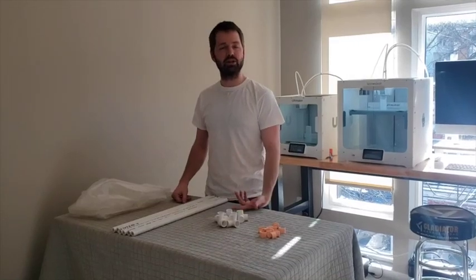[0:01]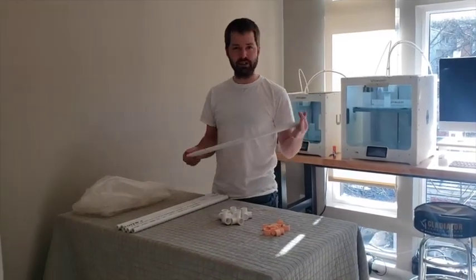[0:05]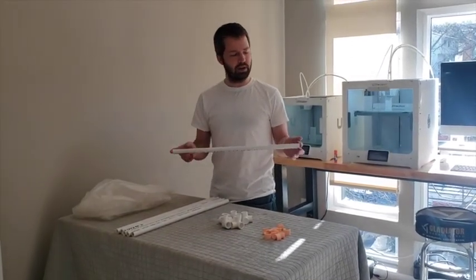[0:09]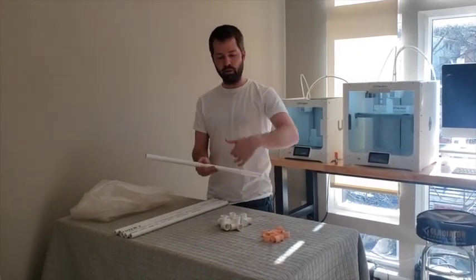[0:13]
Hi, so I'm going to show you how to assemble this device. There's PVC pipe, half an inch is the size. It's available at any hardware store like Home Depot or Lowe's. I cut them with a PVC pipe 23.5 inches. That way when you apply two sets of fittings, the widest it becomes is 2 feet.
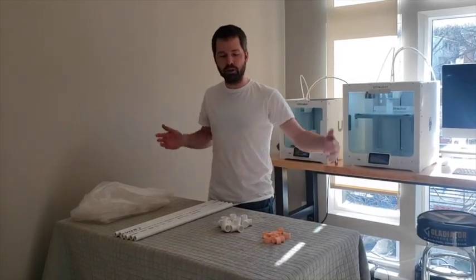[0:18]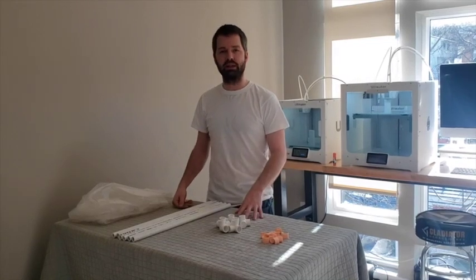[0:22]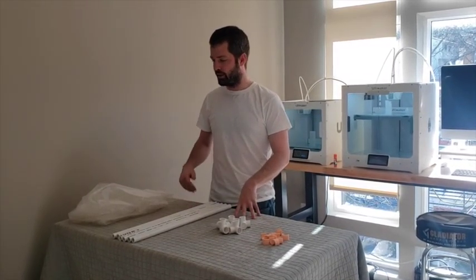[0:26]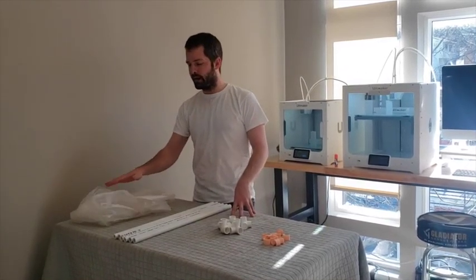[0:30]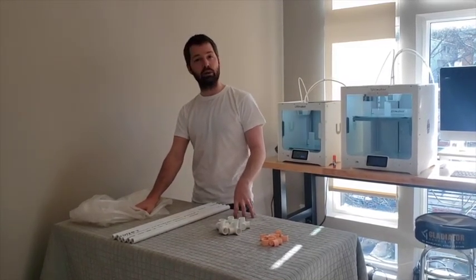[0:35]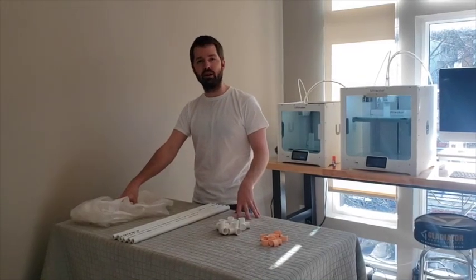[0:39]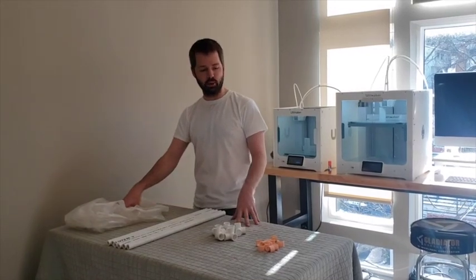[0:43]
The idea is that we're going to build a triangle that is 2 feet high by 2 feet wide, which I think is the minimum working space for an intubation, like high risk intubation specifically. You're going to need your 72 by 72 inch vinyl sheeting. You can use any real plastic you want. There's a couple different plastics out there used for shower curtains. The one I used was $5 on Amazon, and I'm sure you can get bulk discounts. Get the clearest one you can find because visibility is important.
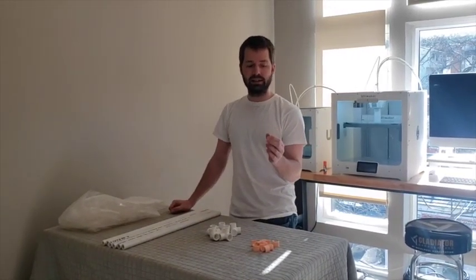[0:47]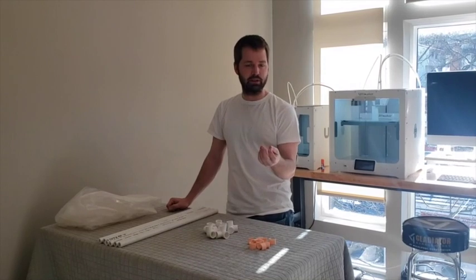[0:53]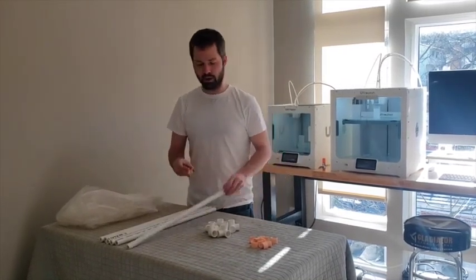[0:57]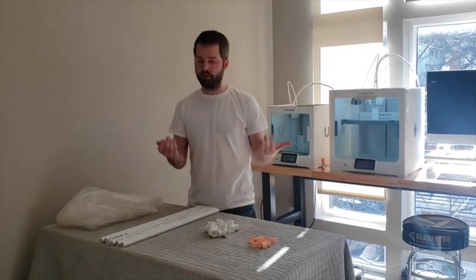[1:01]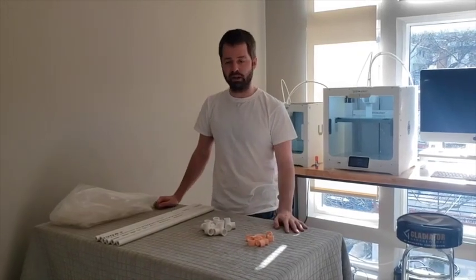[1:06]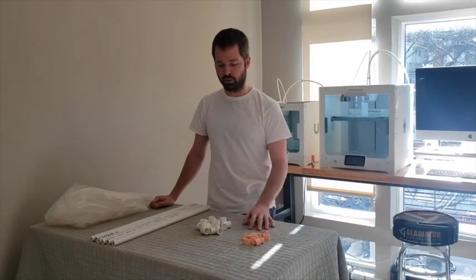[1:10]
This is the only part you can't buy at a store. It's a C-clip. So they take about 5 minutes to 3D print each. Use PLA, which is the cheapest 3D printing material we have. And what it does is enable you to snap parts onto the PVC pipe. If you can find a standardized part, let me know. Otherwise, duct tape works fine all the same. This is just reusable. You can do it snap on, snap off, and make adjustments without increased work.
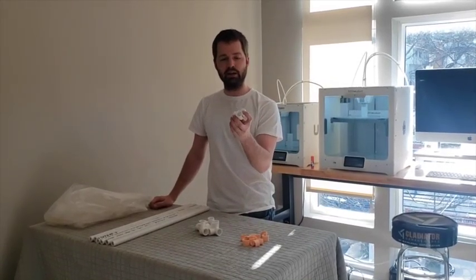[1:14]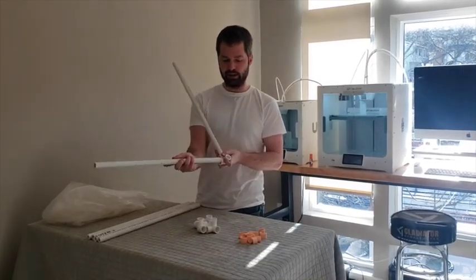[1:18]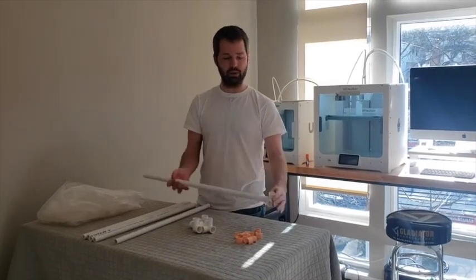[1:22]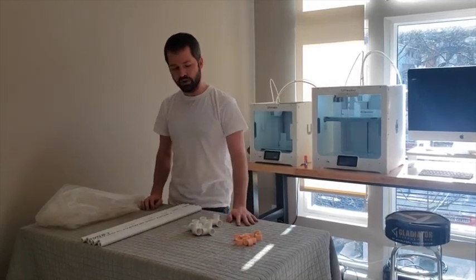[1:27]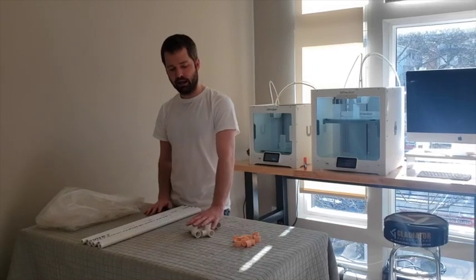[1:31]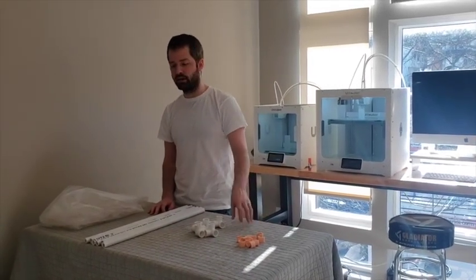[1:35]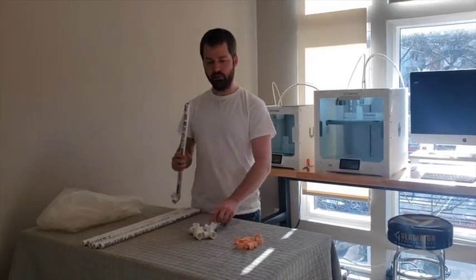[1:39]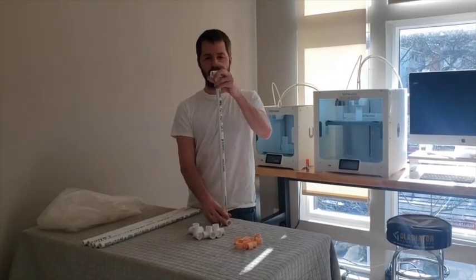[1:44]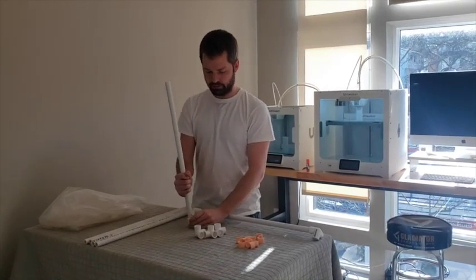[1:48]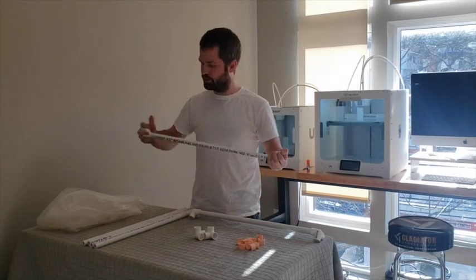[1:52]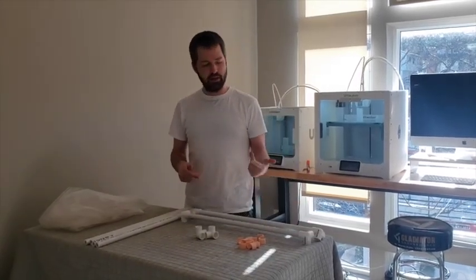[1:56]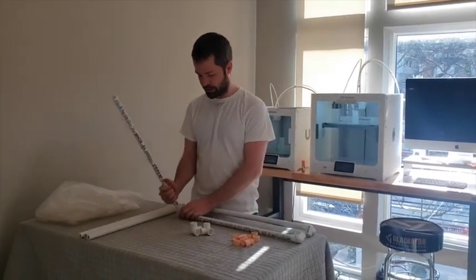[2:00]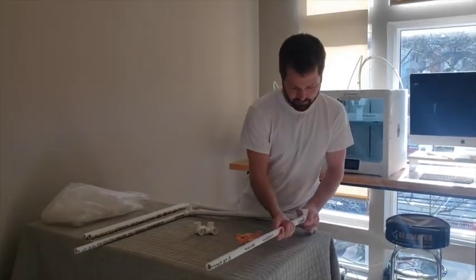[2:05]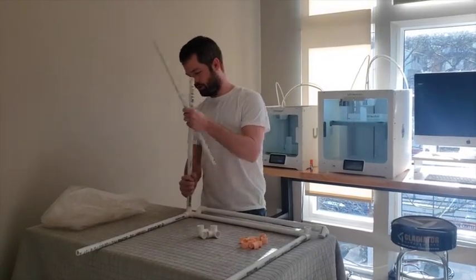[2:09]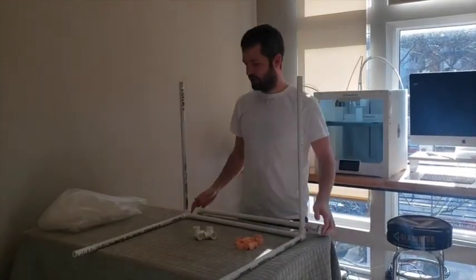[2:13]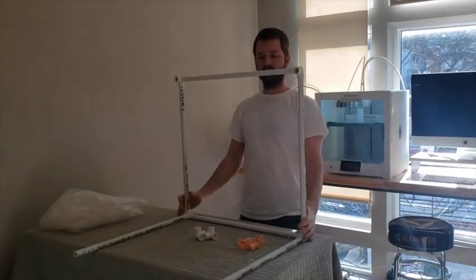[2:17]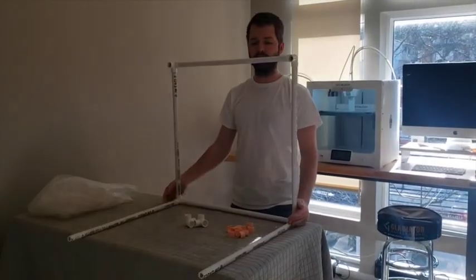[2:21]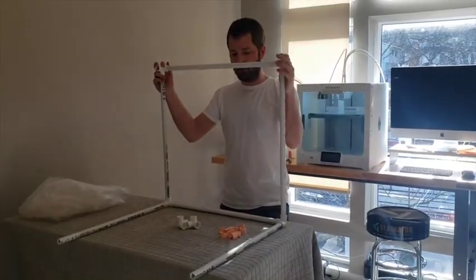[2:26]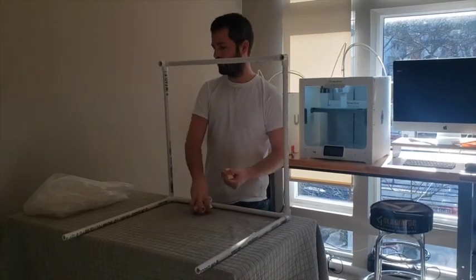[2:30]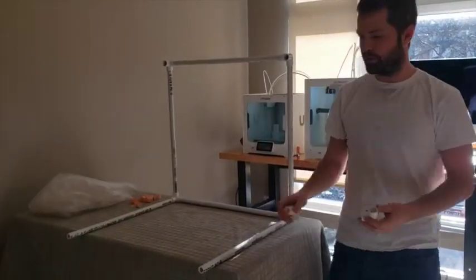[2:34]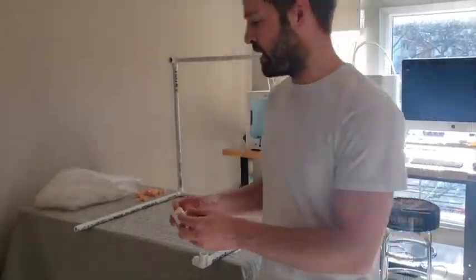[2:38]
And then 2 more for the front frame. 1, 2. Then I'm going to add the top. 1, 2. So this is your basic frame. It weighs maybe 2 or 3 pounds, very lightweight. PVC is a great material. And then with your C-clamps and remaining parts, everything else is modifiable or extra. I actually like the idea of adding weight, so I'm going to add these 2 pieces to the end. I'm going to move around a lot, so it's good to have some counterweight.
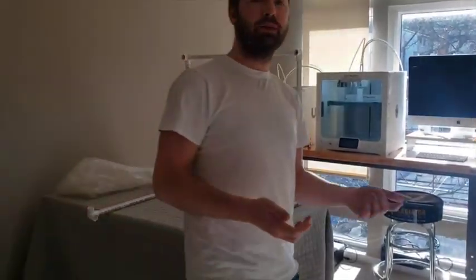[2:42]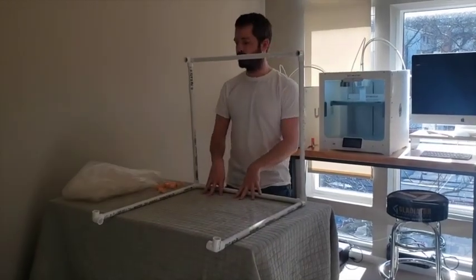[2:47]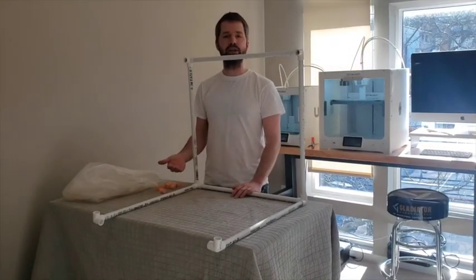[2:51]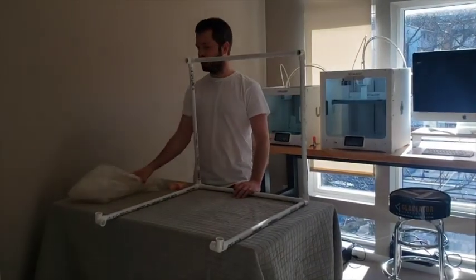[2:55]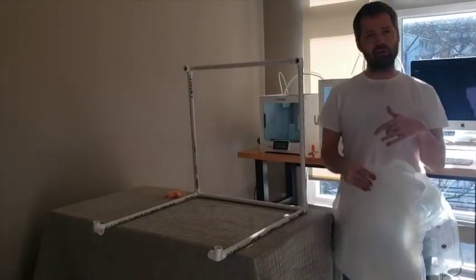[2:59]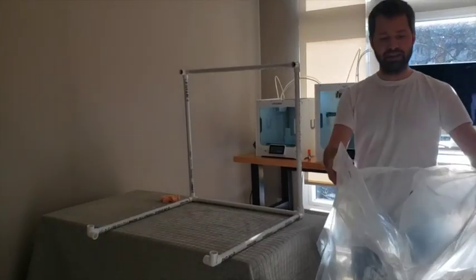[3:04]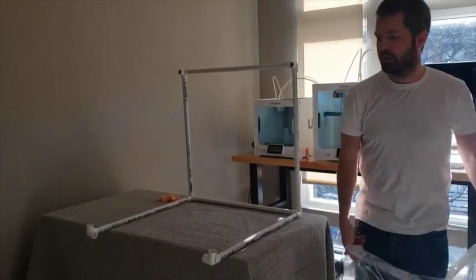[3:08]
And ideally, you build the frame at a bare minimum before you have a patient come into the emergency department. I'm going to go in and assemble the whole tent, because again, in a perfect situation, all of these things would be set up in advance. So I'm going to have my C-clips ready. I'm going to take my sheet, which again has to be pre-cut. You're going to cut 6-inch holes at sites. I'll show you a little roadmap of where you can cut them for end users. Since it's 72-inch square, everything can be standardized for user to user.
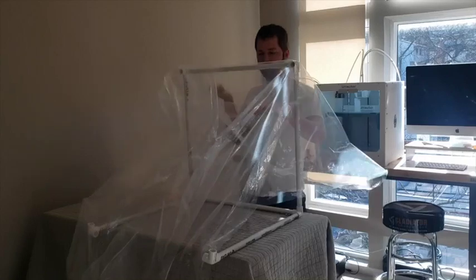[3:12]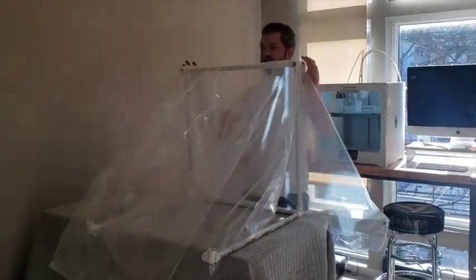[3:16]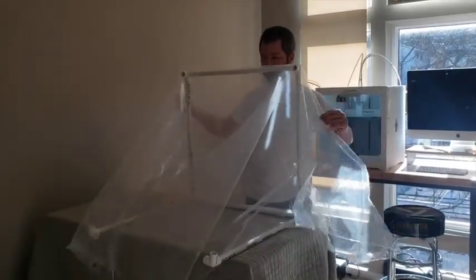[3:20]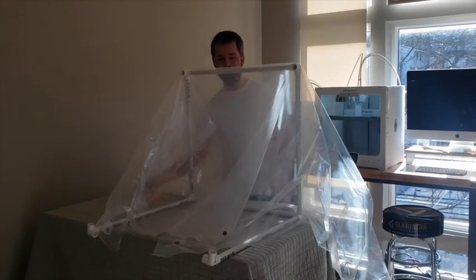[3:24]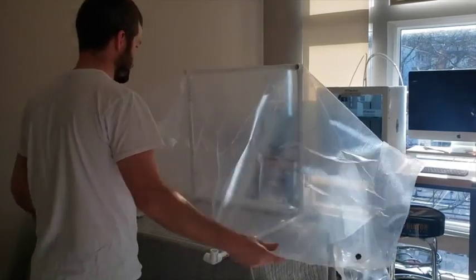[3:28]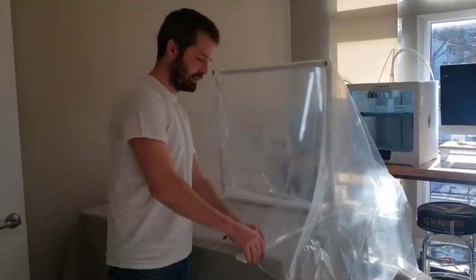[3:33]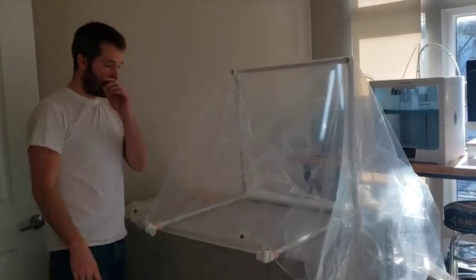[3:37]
You're going to drape over the top section. You're going to take these 2 front holes and put them towards you to make them symmetric in the center of the box. Everything you're going to pull taut and symmetric over the sides with a little bit of slack in the back. The first 2 clips you're going to use are going to be on the back side. So you're going to come to the back here. Again, you're going to put it taut. And you're going to clip each of these things in.
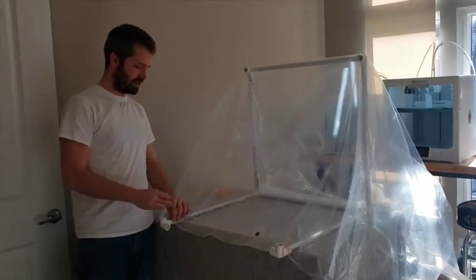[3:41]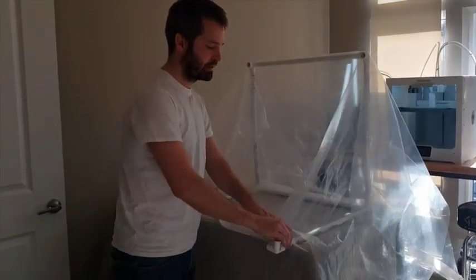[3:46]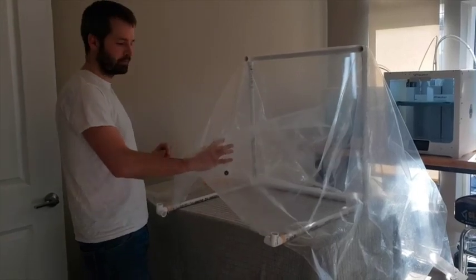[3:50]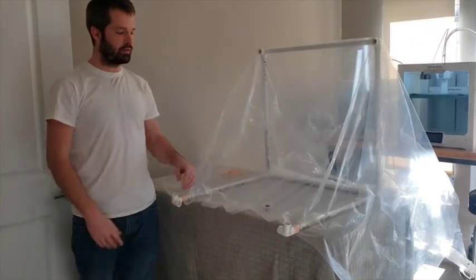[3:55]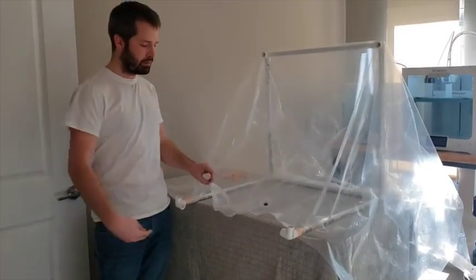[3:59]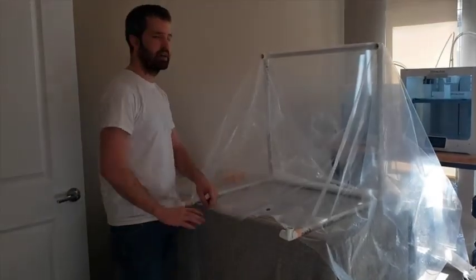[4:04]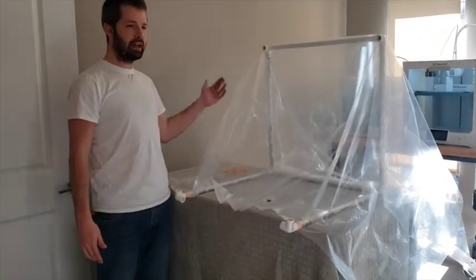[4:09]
They just snap on to the end pieces, and that's going to put tension in the back. When you get a really morbidly obese patient, you might have to take the C-clamp off, add some slack by a couple of inches, and do the same thing on the other side. And that will fit a more obese patient and have more wiggle room. Ideally, you would have it as tense as you can to reduce air movement or air flow. And if it was a little too tight, the object would just ride over the belly. It would make bigger windows for people to pass you stuff. But at the bare minimum, you need enough slack that somebody could pass you an item in a controlled fashion on the sides.
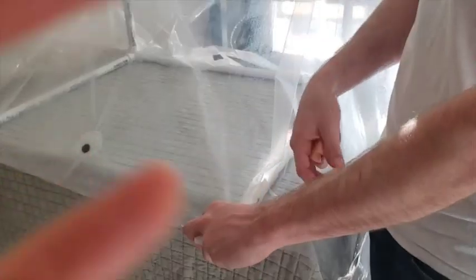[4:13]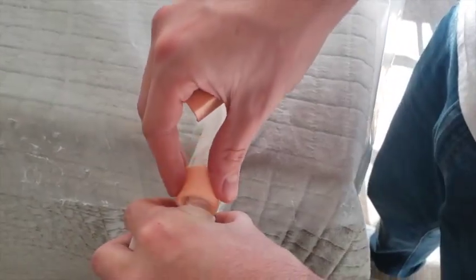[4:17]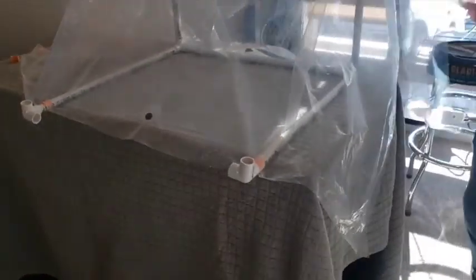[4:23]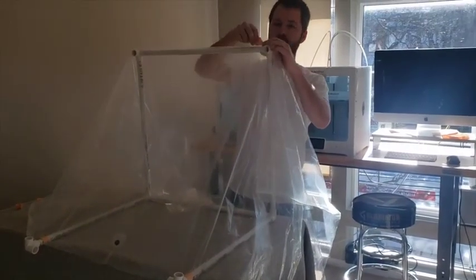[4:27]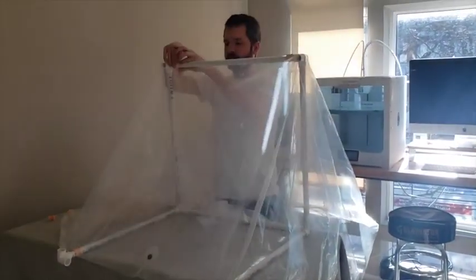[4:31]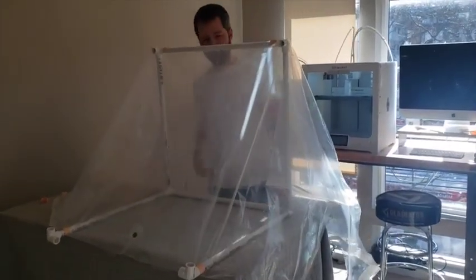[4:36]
The other 2 locations people could access the patient are from the side triangles. Right there. Each of the C-clamps snaps on the end piece, keeping tension on the back. Now I'm going to make it tight over the top, and C-clamp 1, C-clamp 2, so we just have the back and the top.
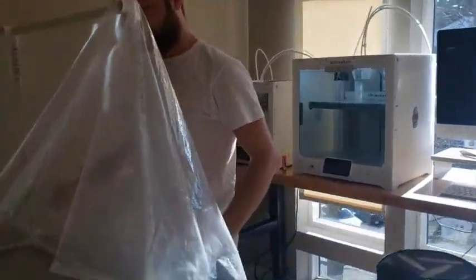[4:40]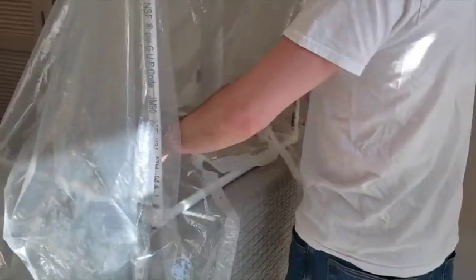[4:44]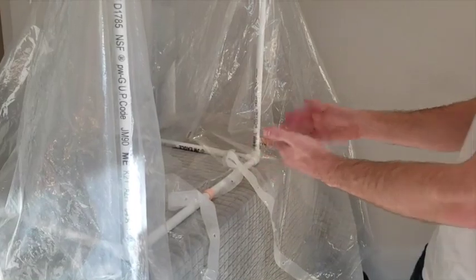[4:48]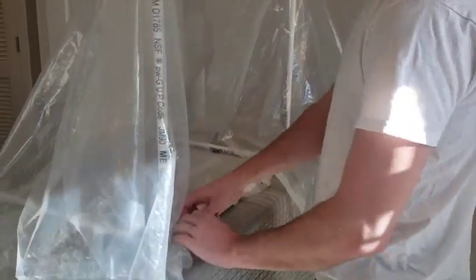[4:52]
The last piece in this axis is going to be the front. Come around. So the front user actually needs some slack, so what I'm going to do is put the end piece with as much slack as I can perform in the front. And then again, I'm going to clip to the sides. I'm not going to do it tight. I'm going to give it a couple of inches of slack.
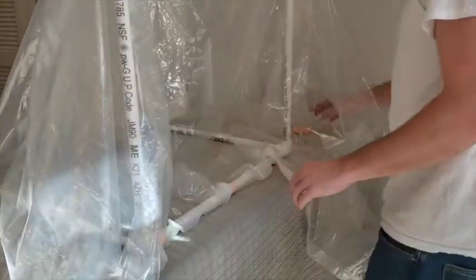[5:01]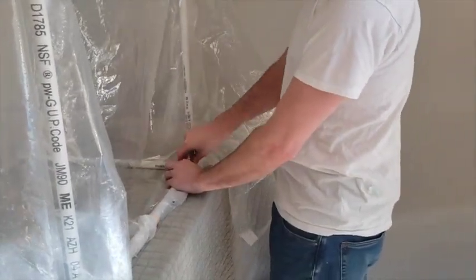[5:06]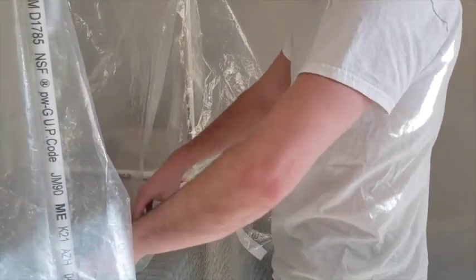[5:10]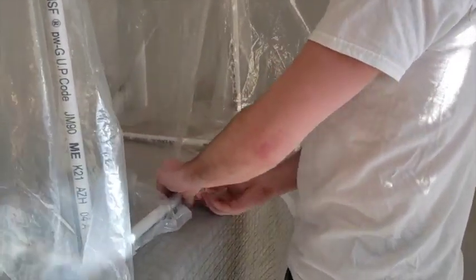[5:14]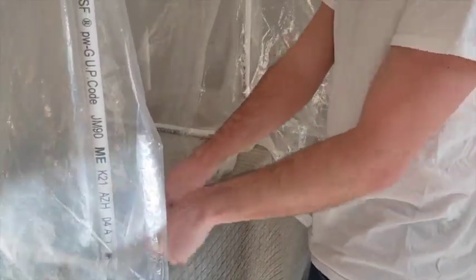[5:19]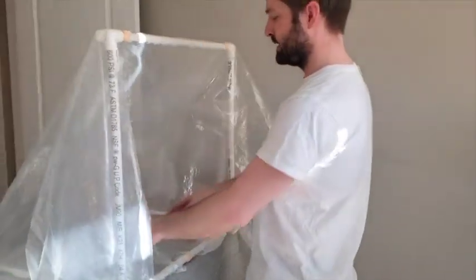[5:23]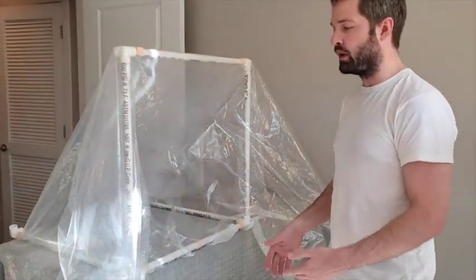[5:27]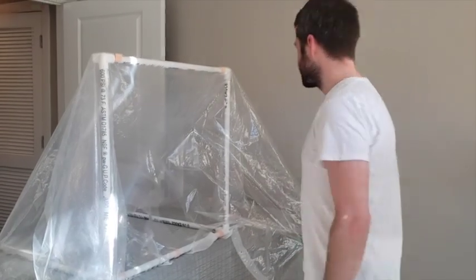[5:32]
And you can also tuck things underneath or roll the C-clamps to actually tuck things on the underside of the components. That'll help minimize any flow of air underneath the device. So you're gonna get this front working space that is now defined by the arms. The sides can be completely draped if you want them to. In theory, with gravity, they'll just fall down. If you do want to secure them, again, you can just keep using more C-clamps.
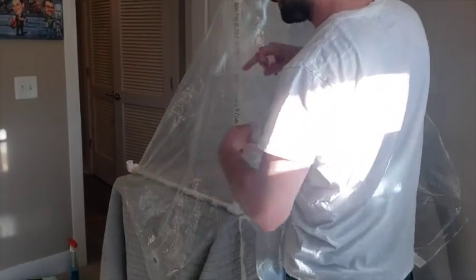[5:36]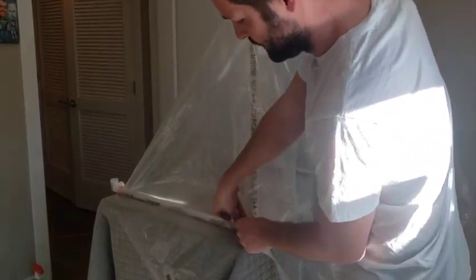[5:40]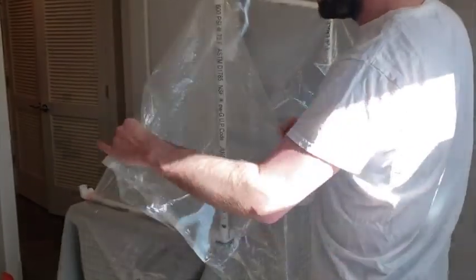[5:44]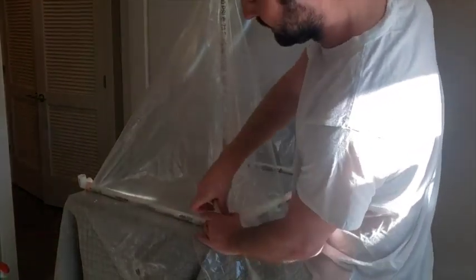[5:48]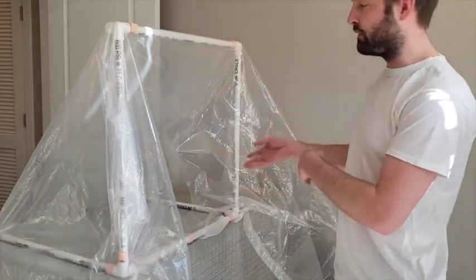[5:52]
What I'd recommend doing is taking one for just the side itself and doing just the side. And then whatever slack you want to get rid of, fold over a few times into the working space and again, apply a clamp. You would just repeat that for the other side.
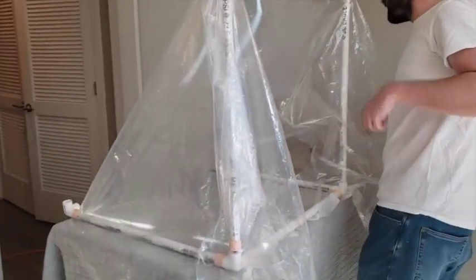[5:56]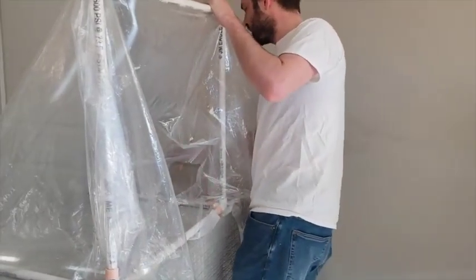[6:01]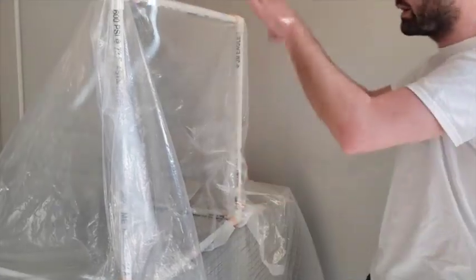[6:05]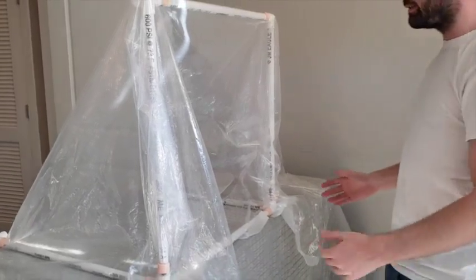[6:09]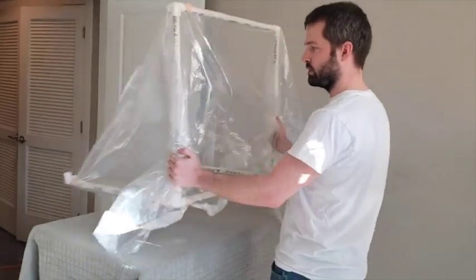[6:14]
So here's my working space, I can reach inside. I can choose to clamp the sides in advance if I want, but I don't have to. The only thing I have to do is provide enough clamping so that I create a workspace and the curtain stays in place. Now, if you've applied all the C-clamps, you can move this object around a fair amount without the tent actually moving or adjusting.
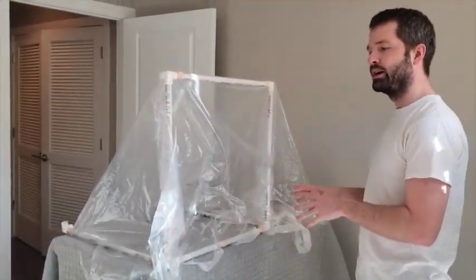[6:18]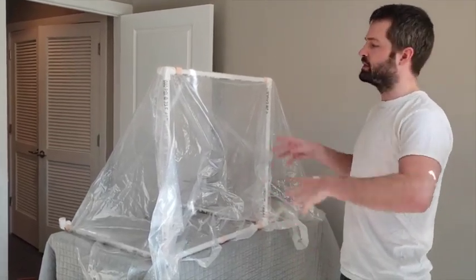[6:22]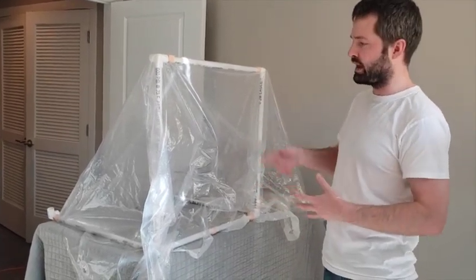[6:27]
And ideally, you would have this tent assembled and ready to go before the patient gets on the bed. So when the patient arrives on the bed, you simply take this tent and place it on the patient, and you can make small modifications for the abdomen on the bottom ones, for the end user if you want over here.
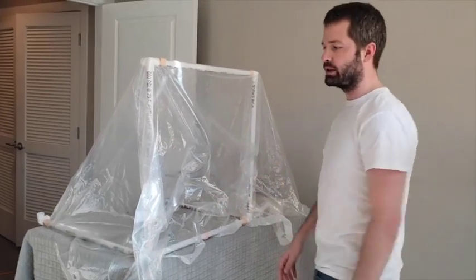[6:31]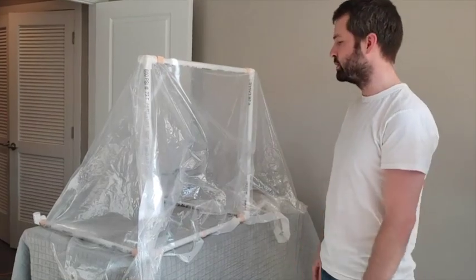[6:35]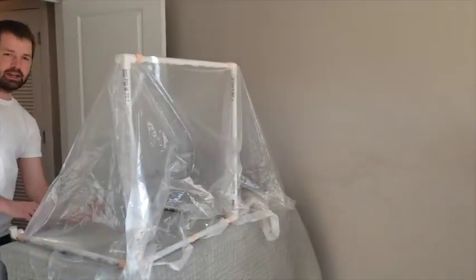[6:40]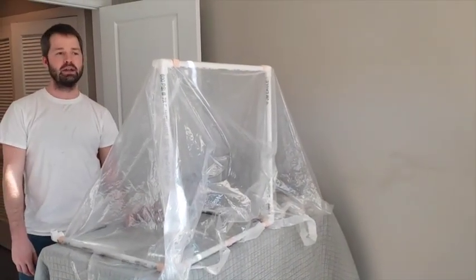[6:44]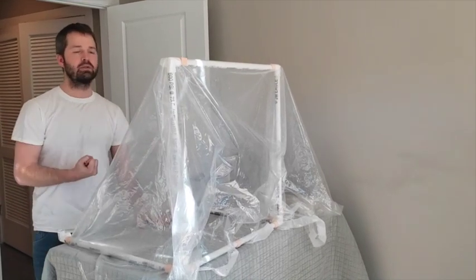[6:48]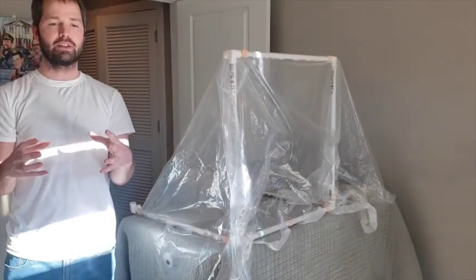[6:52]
In an emergency, you could cut an X, and that would give an extra working space for a person to use. Again, they could also access it from the back end and hand in equipment in a controlled fashion, and you could put a negative vacuum source on the side or abdomen of the patient to draw particles away from the end user. I'll show in a separate video how to make that with three parallel vacuum tubes.
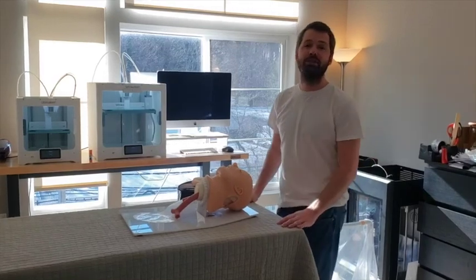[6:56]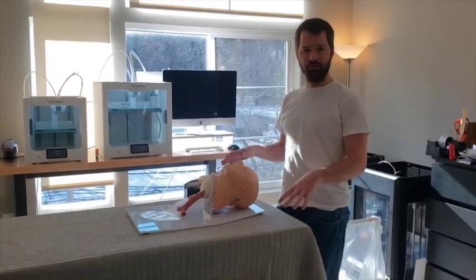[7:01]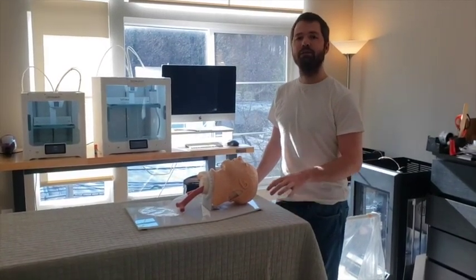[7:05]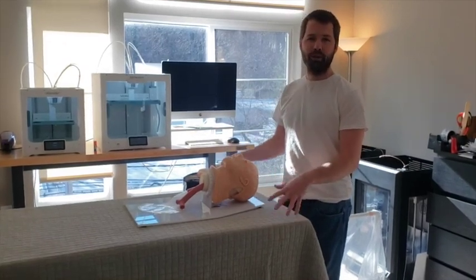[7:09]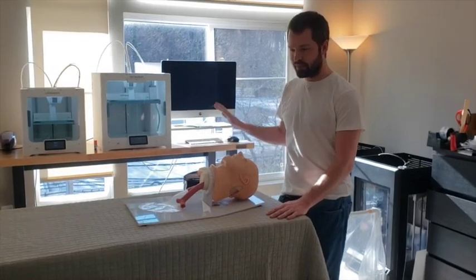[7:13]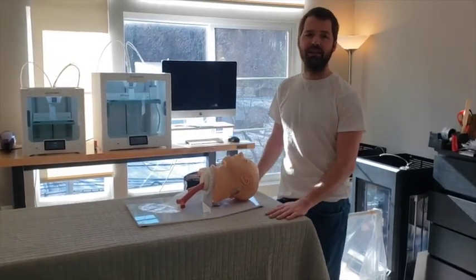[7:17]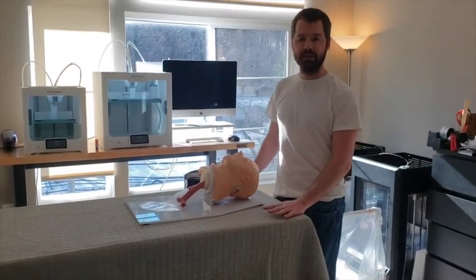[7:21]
So here's a demonstration of how it would work. You would have your patient already on the bed in the room, and in a perfect situation, you would have already assembled your tent before you decide to intubate. So let's assume we're in that perfect world. You had a very nice resident who actually took the time to set these things up in advance. And the tent is set up and just sitting on the other stretcher in the resus bay or set on the side, but fully assembled. Someone spent the 5 minutes.
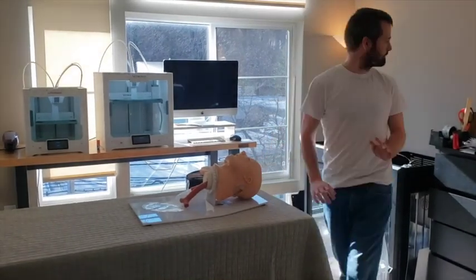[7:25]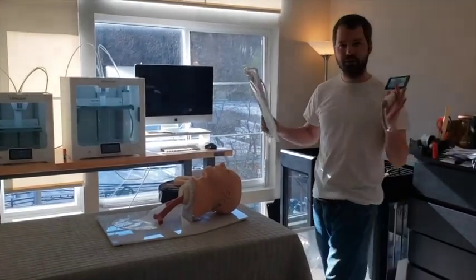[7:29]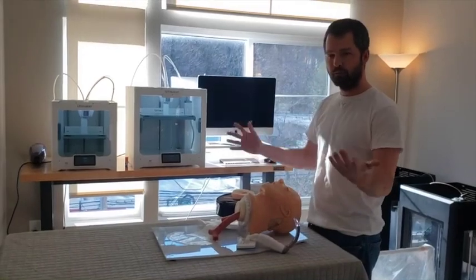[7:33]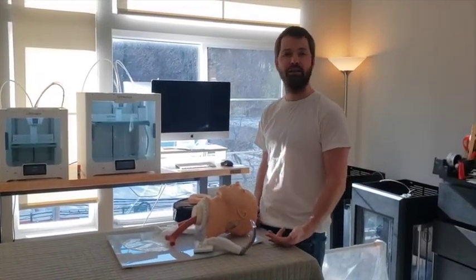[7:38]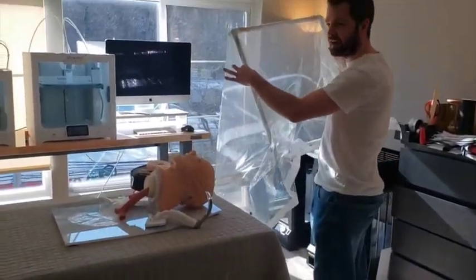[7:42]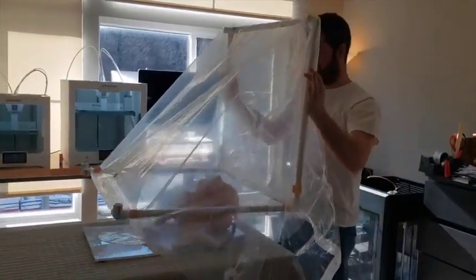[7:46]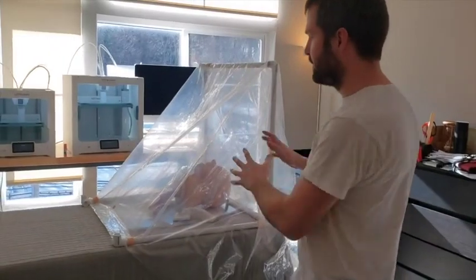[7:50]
So patient rolls in, you make the decision to intubate. You get the equipment you would want and you sit it down next to the patient. Push your meds, do whatever you're gonna do before you start generating an aerosolized event. Then you're gonna grab your tent, which weighs 5 pounds, is already fully assembled, and you're gonna place it over the patient on the stretcher. Now, what it's gonna do is it's gonna cover all the danger zone.
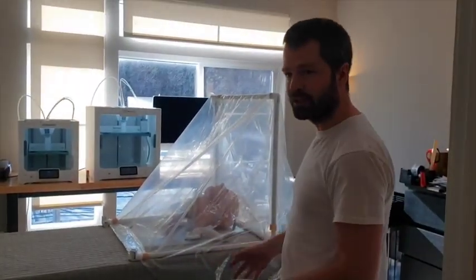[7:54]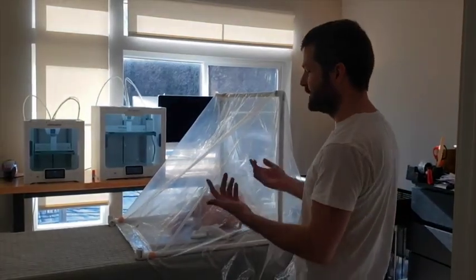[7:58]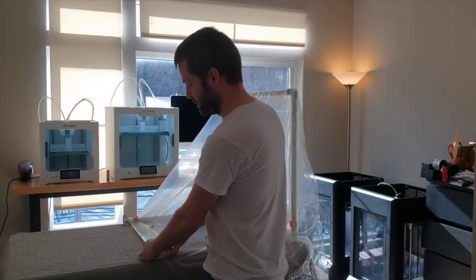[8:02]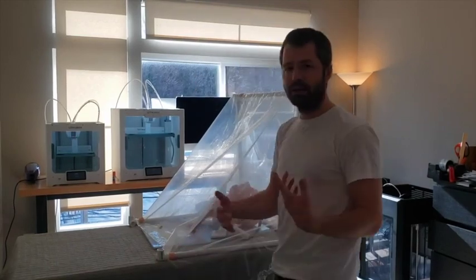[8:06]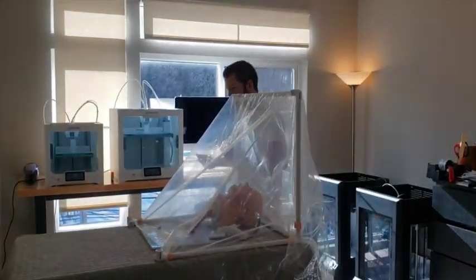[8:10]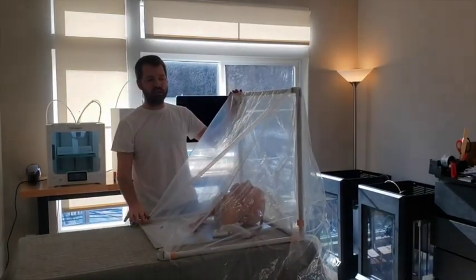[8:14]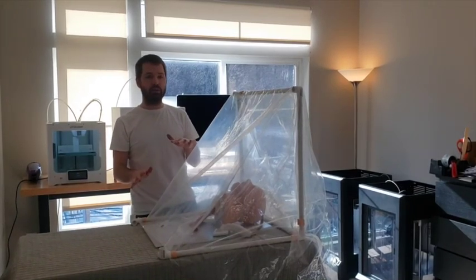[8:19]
And if you need to make adjustments, someone else can be making the adjustments while you're actually setting up for intubation. So for example, if they had a really big abdomen, you need to make more slack in the bottom, you could loosen up one of these clips and add less tension and clip it back down. We'd have to work out some standard way of setting it up. And there's clips all throughout the setup that you can change the tension if you need, but the person intubating is not doing these extra tasks, everyone else is.
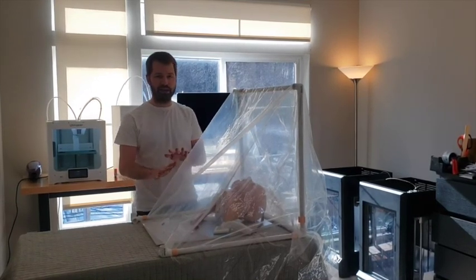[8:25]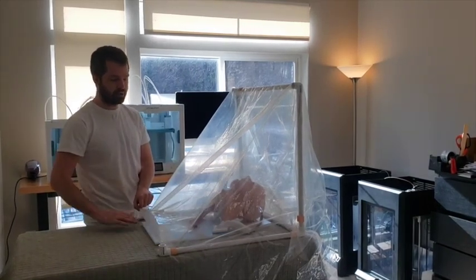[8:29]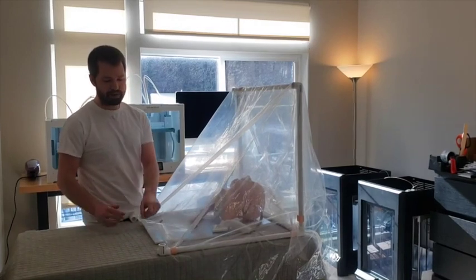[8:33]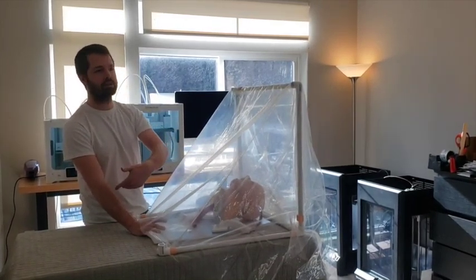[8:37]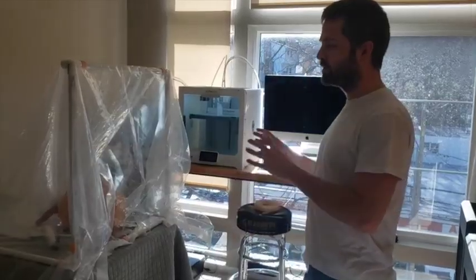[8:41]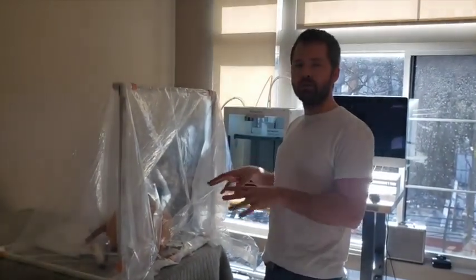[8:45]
There are 2 points of access to the patient with this setup. Ideally, you're not putting in items through the side, but rather with the person's abdomen here, it's naturally gonna make a window. People can provide items underneath to the patient. And again, in a perfect world, we have a vacuum source of some kind drawing things away from the highest risk user, which is the intubator. So, the hood is actually over the patient. There's one predefined user space you have to have, which is the person doing the intubation.
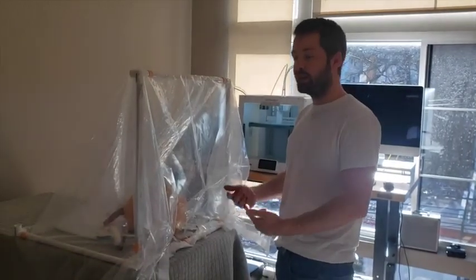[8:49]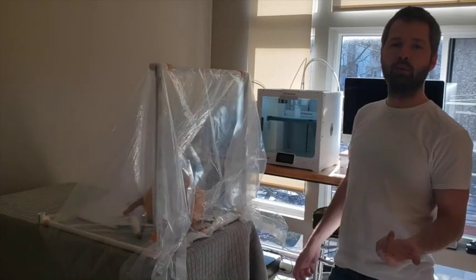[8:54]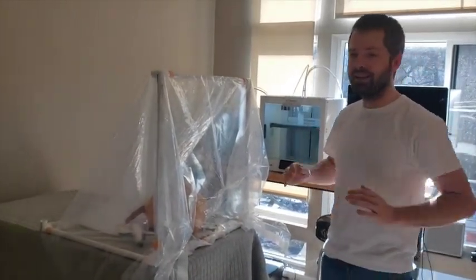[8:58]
If you want to in advance, you can cut holes on the other two ports if you want up to 3 people working in the same space, and you would make the windows partially closed so that unless someone breaks the seal, it stays closed.
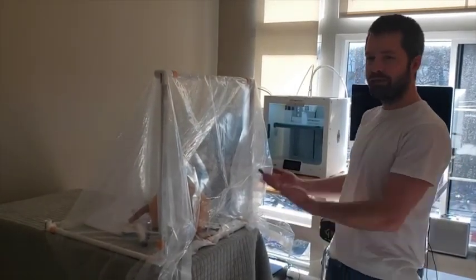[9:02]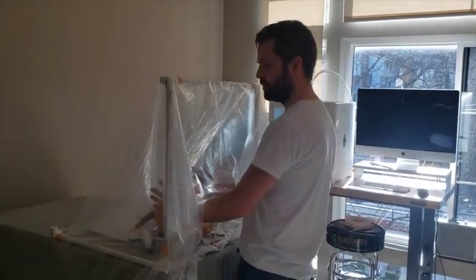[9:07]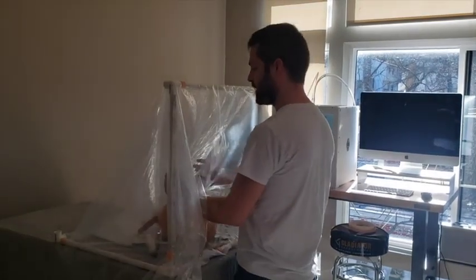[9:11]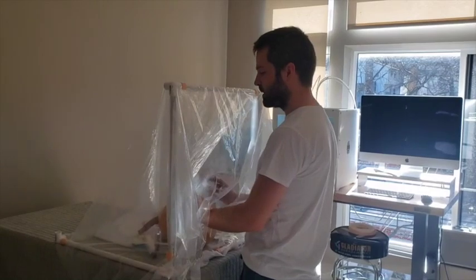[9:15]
So for the intubation, obviously you have to put your arms through the space. So there are 2 6-inch holes. You put your hands through the holes. There's no sharp objects. You have a working room, you can go left, you can go right, you can go up, you can go down. The amount of slack you set in the front defines how much working space you have.
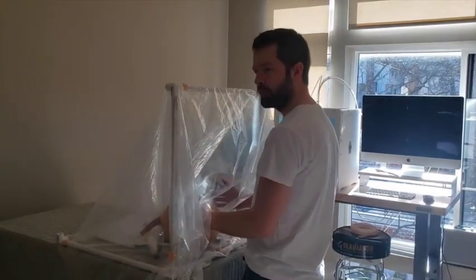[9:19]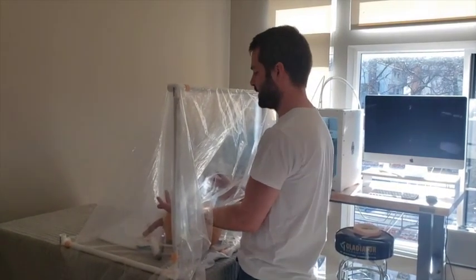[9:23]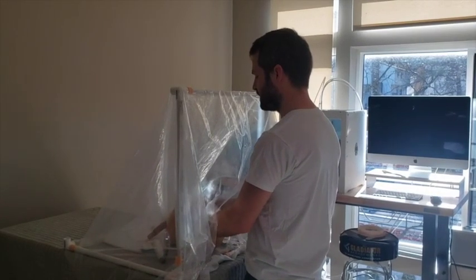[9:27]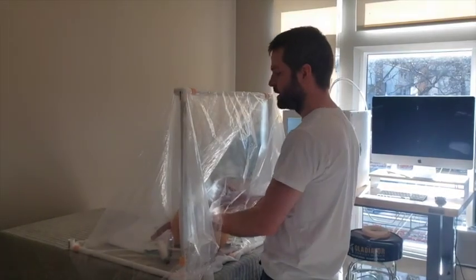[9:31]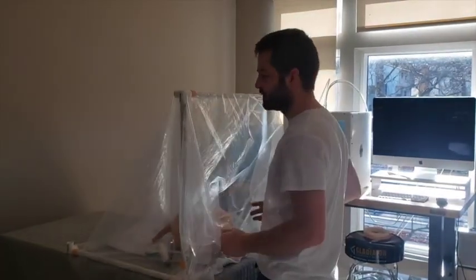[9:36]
But I can get right up on the object and pull all the way back very easily without cutting my arms like the other 2 acrylic designs that are out there from Taiwan. So in this space, I can see through the vinyl, I can see the patient, I can manipulate and move. If I need to, I can ask people to adjust the container. Otherwise, I have to come back out and move the container. It weighs 5 pounds, so it's very easy to do.
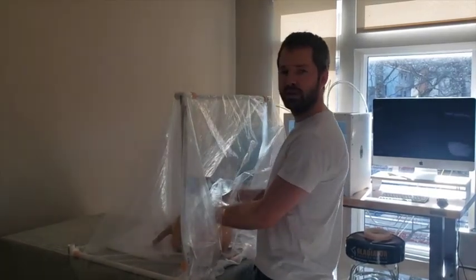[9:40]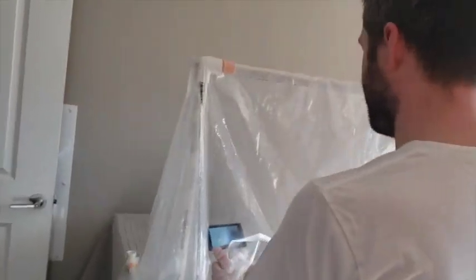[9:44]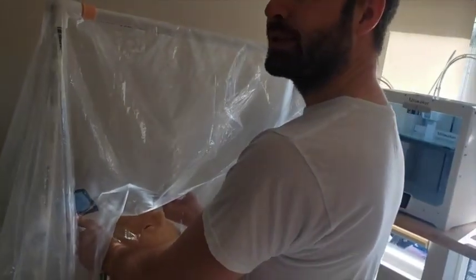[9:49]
So I'm in my working space, I can grab my tools, so you can move over my shoulder. So I confirm my equipment works, I have everything set up in the space I would need. If not, I'd ask an assistant to pass it in from the other side. So I perform my intubation.
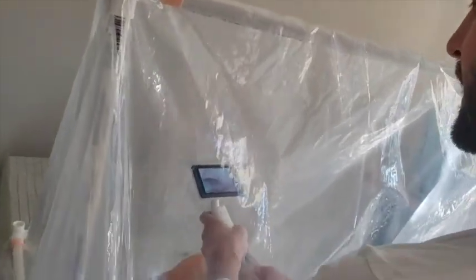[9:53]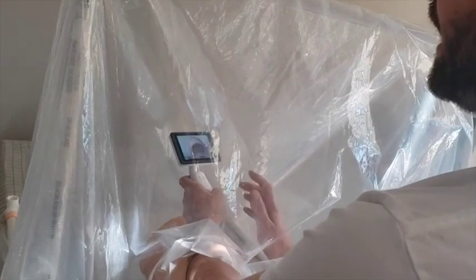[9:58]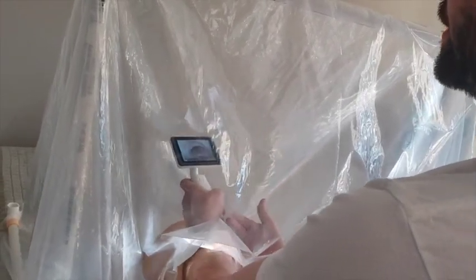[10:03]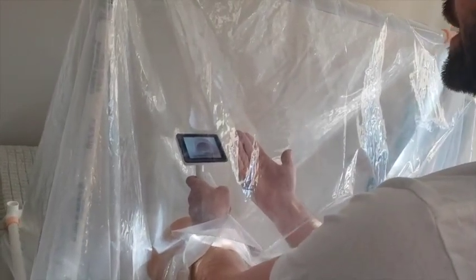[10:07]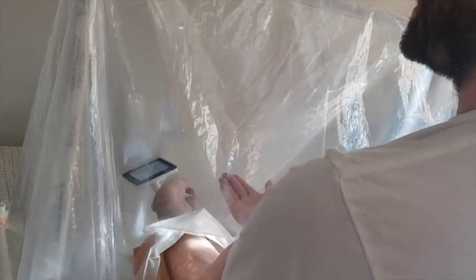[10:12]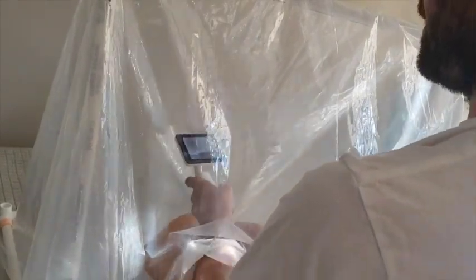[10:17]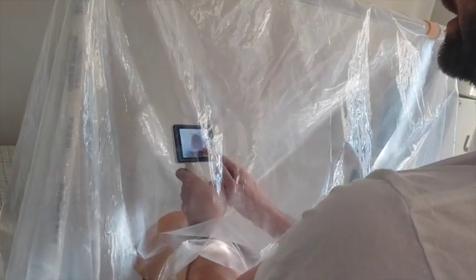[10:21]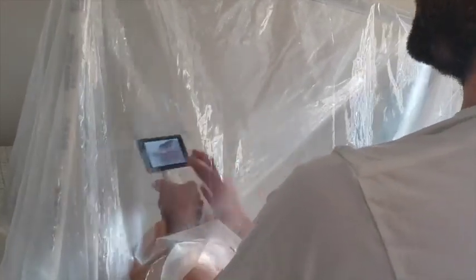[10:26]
And if you notice, in the other 2 models out there, you can't actually bring an object up with height. So if you notice with the video scope, I have an extra foot above this patient that I actually need to be working space. And if the acrylic only goes a few inches above the face, I can't do this, bring an object in and manipulate over the space, because at the very least I have to go at least a foot over the patient for most video scopes. So I'm in my space, I can do my manipulation with a fair amount of movement without an issue.
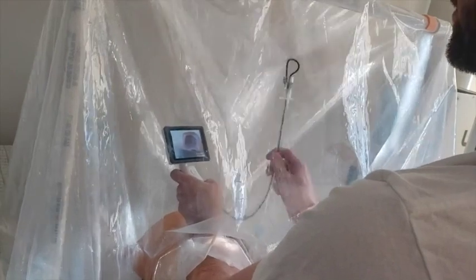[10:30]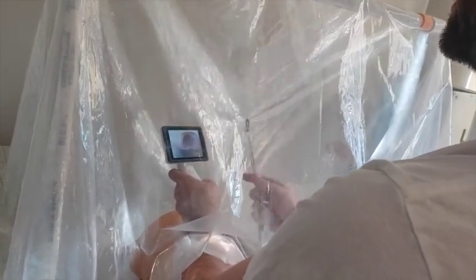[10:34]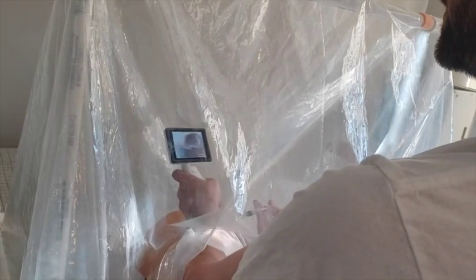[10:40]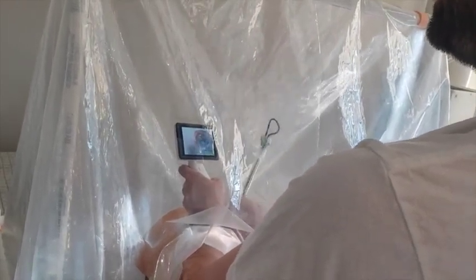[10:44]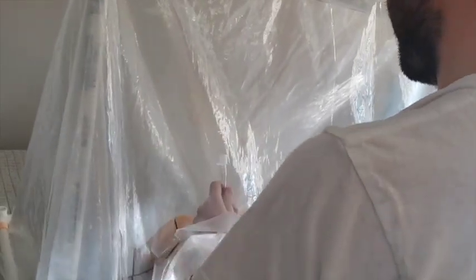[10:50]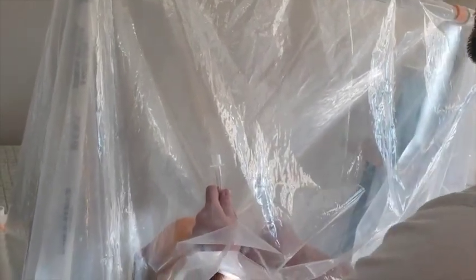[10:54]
I can grab my ET tube, and again, if you watch, as the ET tube comes over and gets placed, unless I'm placing very, very low angle, again, I need some working space. So anything that's rigid and I'm hitting against, I'm not gonna be able to have enough working space to manipulate the tube. So I can place the ET tube, withdraw my tools, secure the tube,
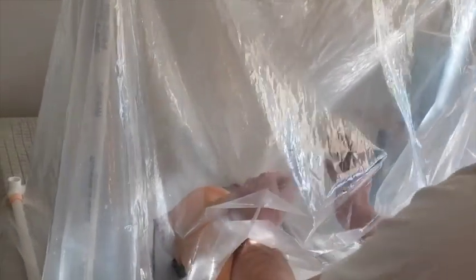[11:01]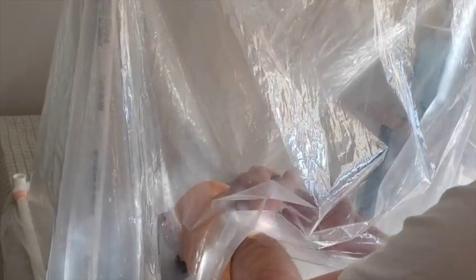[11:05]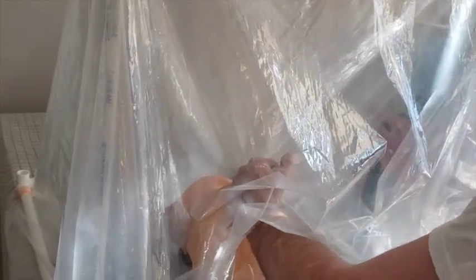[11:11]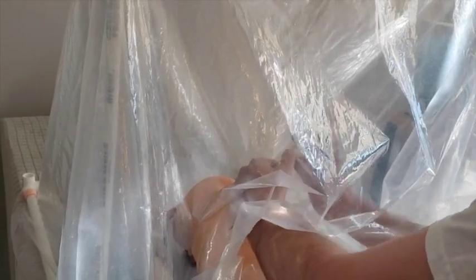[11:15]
and at this point, now that the ET tube is in place, I can either take my arm out and take the ventilator piece in and make the connection, and then the respiratory therapist can set up from the outside. Alternatively, if I really need a second set of hands, there can be a working window through the side. Again, two holes between 4 to 6 inches. And again, they should stay sealed unless somebody breaks the seal.
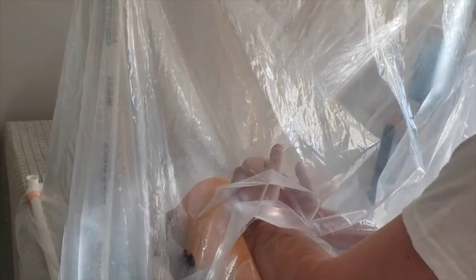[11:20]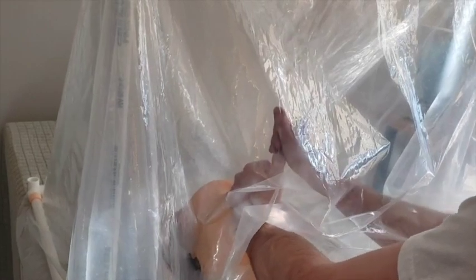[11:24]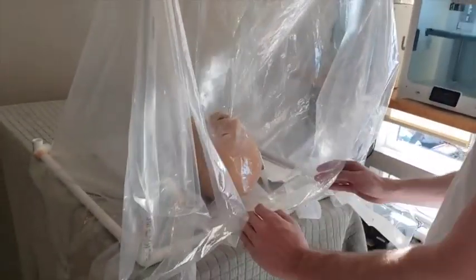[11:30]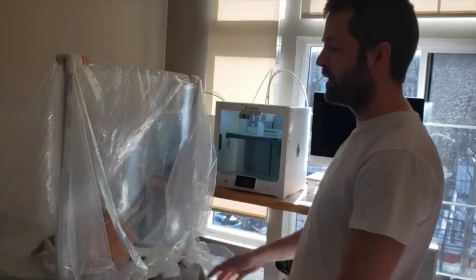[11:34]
So these vinyl sheets, you'd have to make these little pre-cuts, they take a few seconds each. But then the ventilator component can come in, connect, and then once everything is connected, then I remove my hands, and then I leave these open spaces. You could also make covers or caps or a second flap you put over if you wanted to seal it.
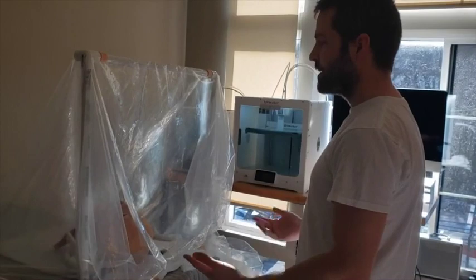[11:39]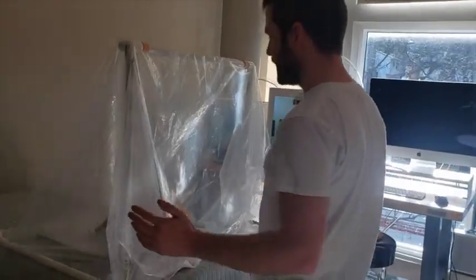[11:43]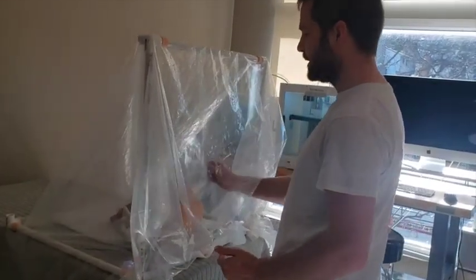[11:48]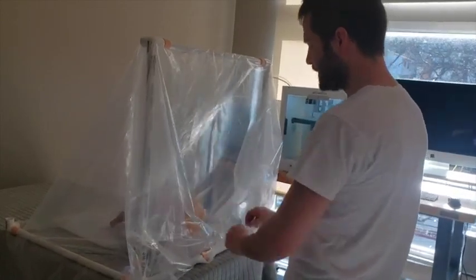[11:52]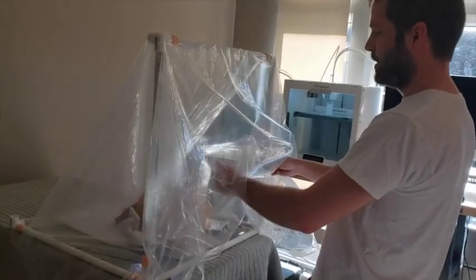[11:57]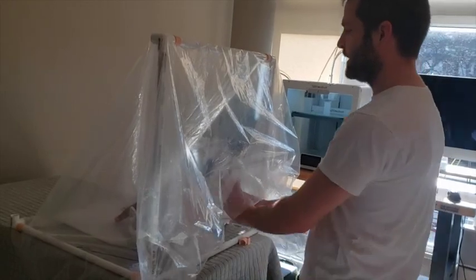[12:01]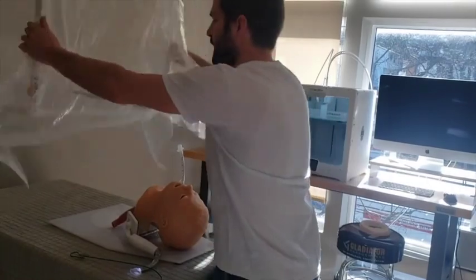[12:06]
Once everything is done and you have a connection, and you actually want to take this whole container off, what I would recommend doing is actually moving the container towards the feet. So if the ventilator component is coming in through here, I would just simply make a cut, take these clips off down the container, or just start disassembling it. But once there's enough space between the vent and the connection here, I can lift the object up and place it over the patient and put it on their feet.
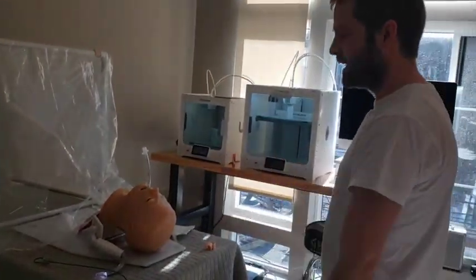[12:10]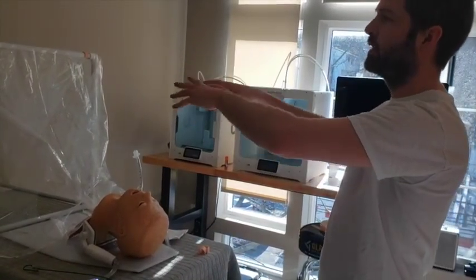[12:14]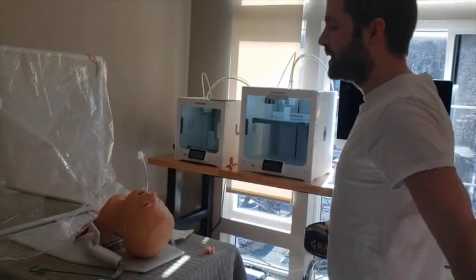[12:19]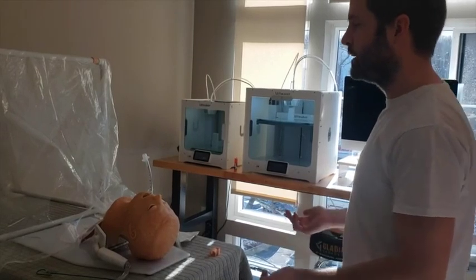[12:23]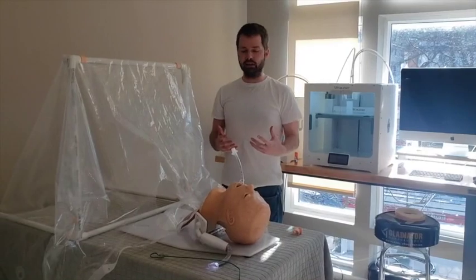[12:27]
And that way this can get cleaned up and sorted out. And we haven't put the contaminated container on the floor or near anybody else. Once all the airway situation is secured and done, then a secondary user can come from the other side and disassemble.
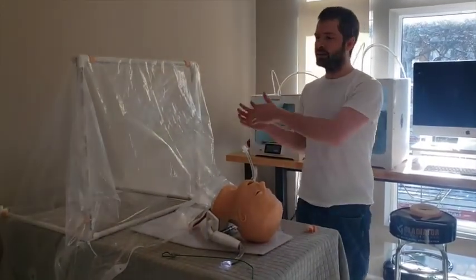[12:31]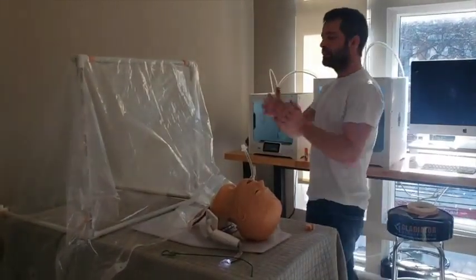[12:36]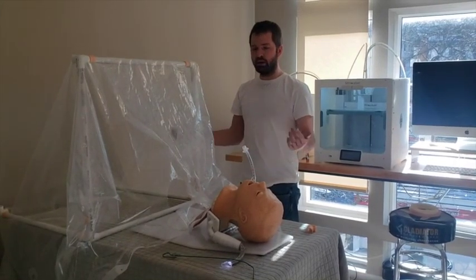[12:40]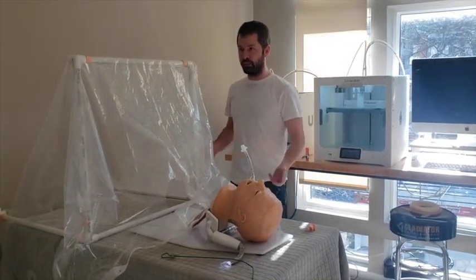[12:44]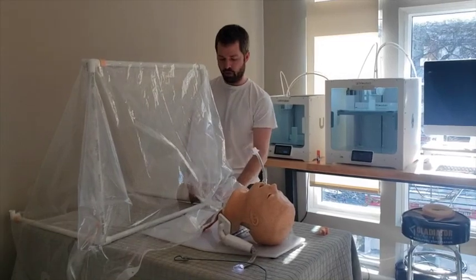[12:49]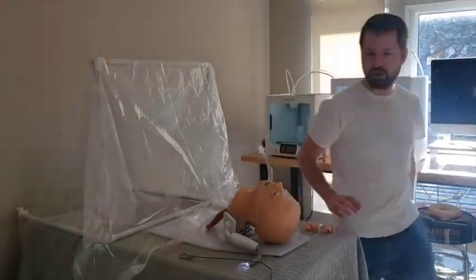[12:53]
All right, so for the second phase, the container has been moved to the foot of the bed. It's a little bit easier than, say, putting it to the side or the back. There's usually not much space on this end. But to the feet, you have time to get it out at your own leisure. Some basic things you can do, you can spray it down with bleach before you make your movements, but at the bare minimum, you can safely remove all the retaining clamps. There are four on each side. Take all your clamps off.
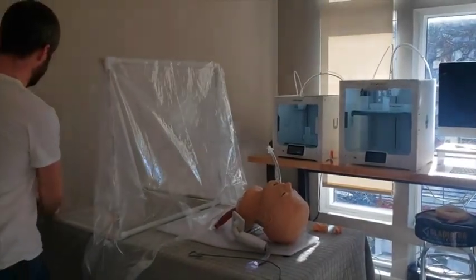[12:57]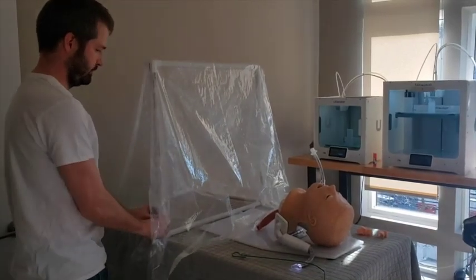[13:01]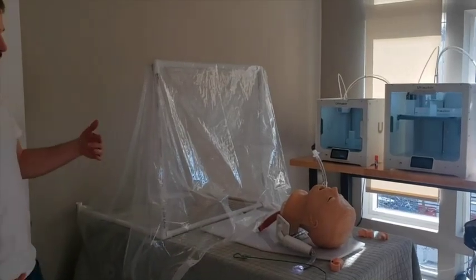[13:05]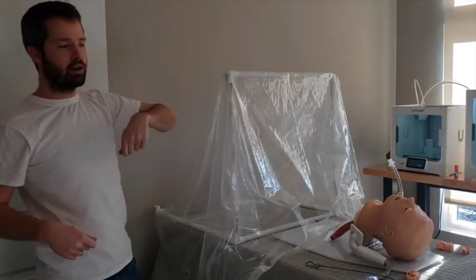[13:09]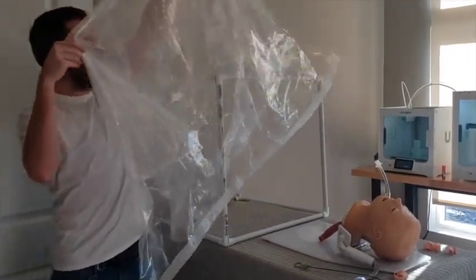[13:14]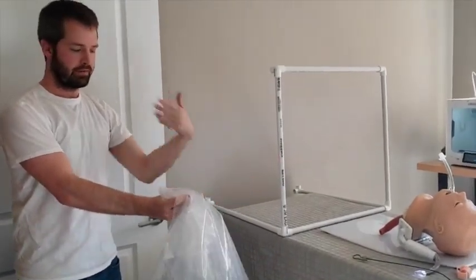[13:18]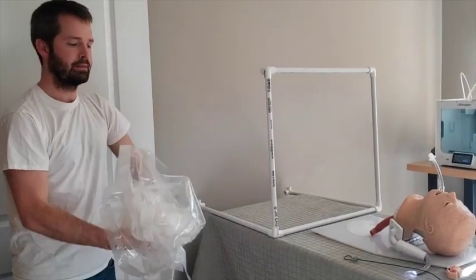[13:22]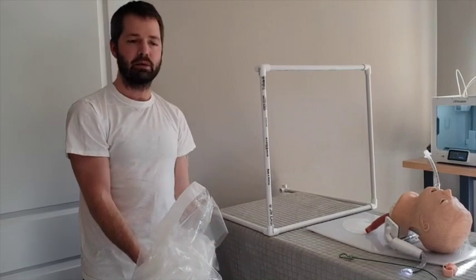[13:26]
And then what you can do is you can take it off in a controlled manner where you basically pinch in the middle and slide off. That way the contaminated ends come together. So I'm gonna lift the sheet and pull it off. And the last person you have to worry about contaminating is the patient because they're already infected. And then again, you can take the sheet, fold it a few times, and place it in the trash. They're only a few bucks a piece, so it's probably not worth recycling, but that can be disposed of.
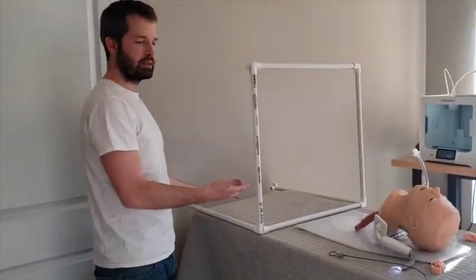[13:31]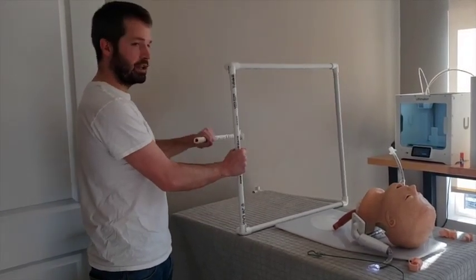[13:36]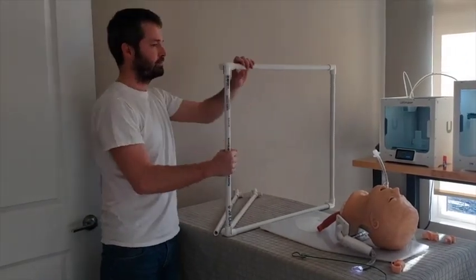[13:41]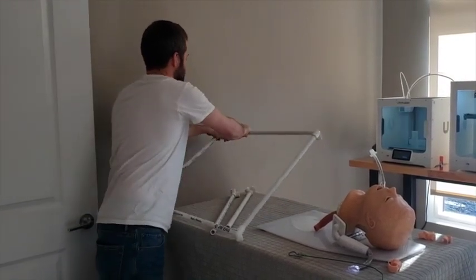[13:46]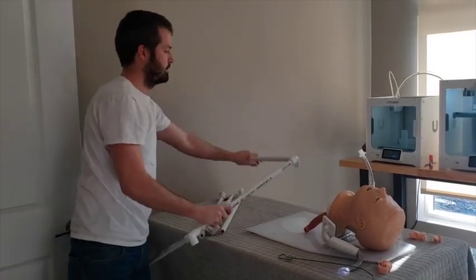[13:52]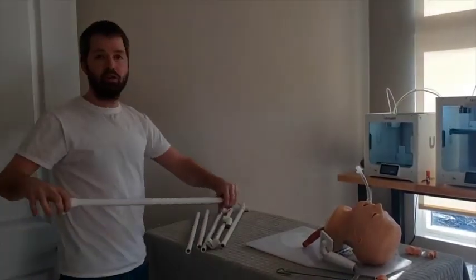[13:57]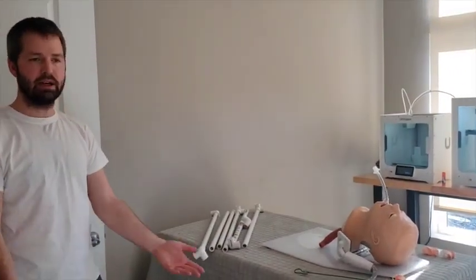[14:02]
And then for this part, what you could do is on the bed itself, you can start to disassemble it. Much like in the assembly video, each piece disconnects. And you would do all this with your PPE still on. And these connectors can be dropped into a bucket, soaked with bleach, or again, they're a couple bucks each, they can be thrown away. That's it.